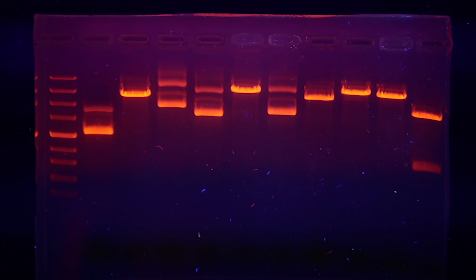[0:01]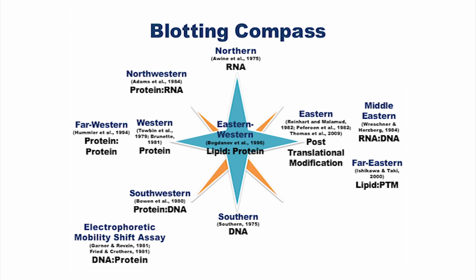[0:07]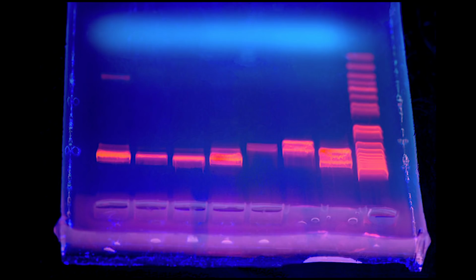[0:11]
A few weeks ago, we looked at gel electrophoresis, an incredibly versatile technique used for at least a dozen different types of analysis of different biological molecules and their interactions. As a quick reminder, the technique works using a special block of gel and electricity to pull molecules through it. You put your sample in pre-made holes in the top of the gel, and a special mixture of control molecules in a hole next to it, then turn on the power and let them run.
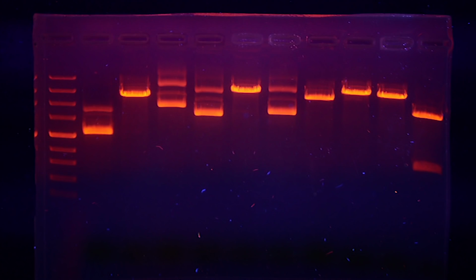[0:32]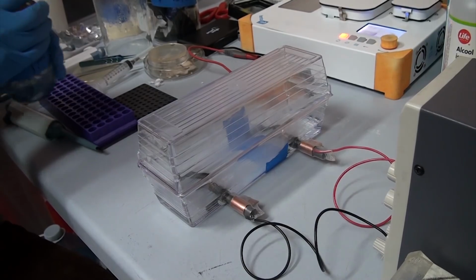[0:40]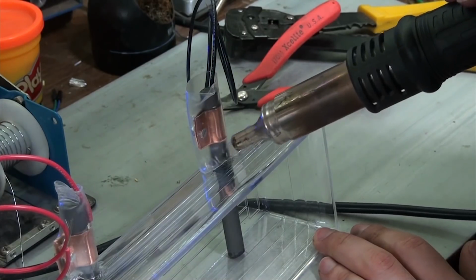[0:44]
The control mixture will spread out as lighter molecules in the mix move faster through the gel and form a series of bands made of molecules of known size. You can compare any bands that your sample produces with these control bands to gauge the size of your sample molecule. Of course, this is a simplification, and you can do a lot more with gels. As part of that video, we looked at how you can make the special tank you run gels in for only a few dollars worth of parts.
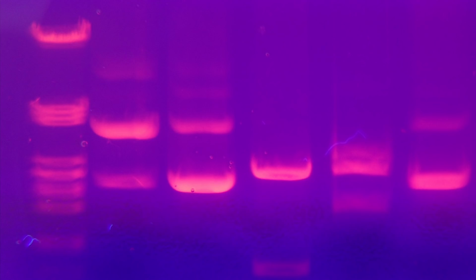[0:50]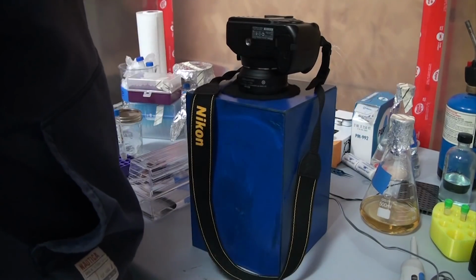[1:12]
The tank works well, but there was an issue I noted, which is actually seeing the bands once you've run a gel. In theory, you can just kill the lights in the room, throw on some UV-blocking glasses, and shine a blue or UV light on the gel and see the bands. But in the case of DNA electrophoresis, the amount of DNA in each band is minuscule, and even though the DNA is stained with a dye that glows under UV light, the amount of fluorescence can often be below what humans can easily see. Luckily, there's a device that solves these problems called a gel doc.
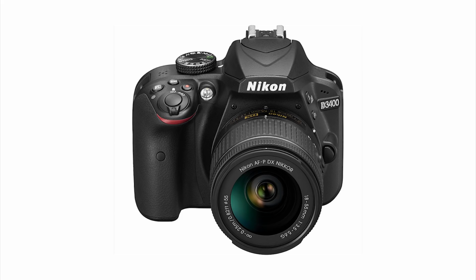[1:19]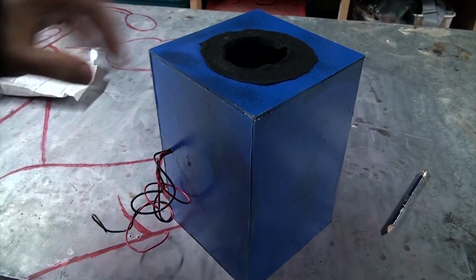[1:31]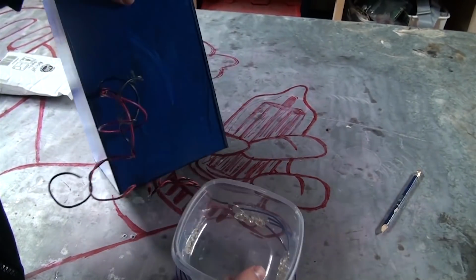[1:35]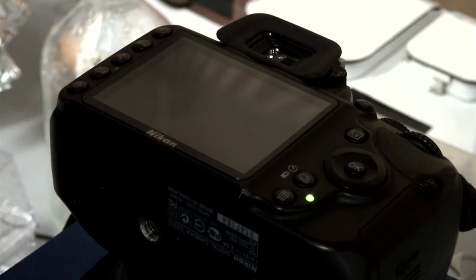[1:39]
Basically, it's a special box that replaces our shoddy vision with some nice, calibrated silicon, i.e. a camera. Normally, gel docs are crazy expensive, easily $8,000 to $12,000, if not more. And yes, it'll come with a lot of bells and whistles like a screen and automatic controls, but in essence, all it is a box with a hole in the top for a camera, a transilluminator, which is just a bunch of blue or UV lights, and a filter on the camera to block that blue or UV light out. So of course I built one, and I'm honestly really impressed with the results.
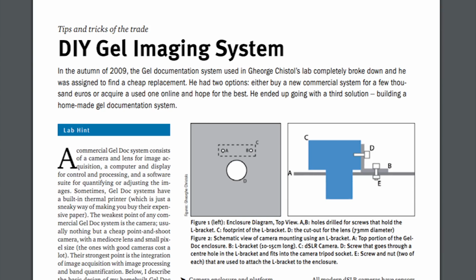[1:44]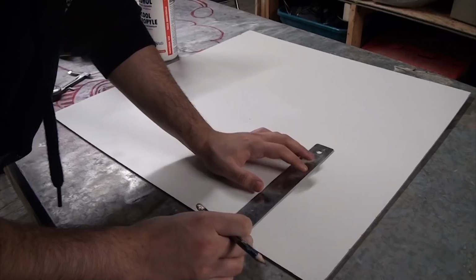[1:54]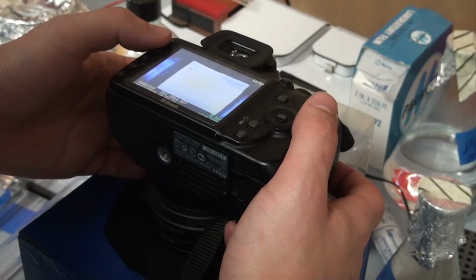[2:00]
I got the basic blueprint from an article in the Lab Times about building a DIY gel doc, and I've linked that in the description. In the paper, they're pretty clear that you don't need to stick to their exact design and lots of variations will work, so in this video I want to go over what I ended up making and the parts I used. Then we'll look at some tests and other fun things that this device can do. Let's start with the camera.
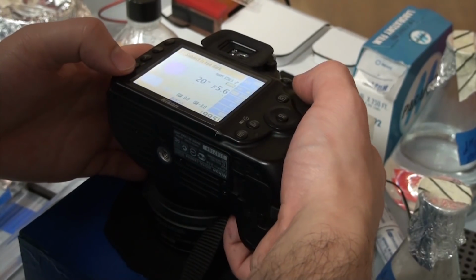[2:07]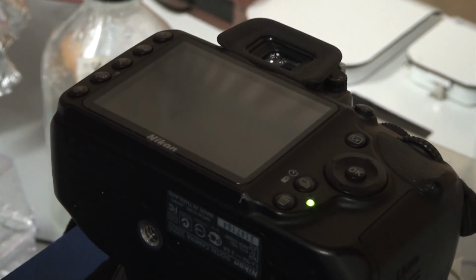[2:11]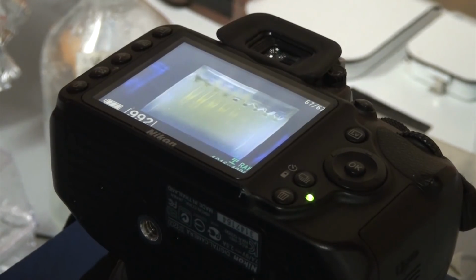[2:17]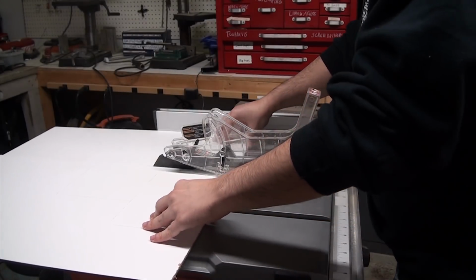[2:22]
I'll be using my Nikon D3200 as the camera because it can take long exposures, and gives me lots of control over the settings so I can take the best picture possible. You can probably get away with a cheaper camera, but your results may vary. Personally, I really would recommend a DSLR for this, as my best results came from a 20-second exposure, which simple point-and-shoot cameras can't usually do. I figured out the minimum focal distance of my lens, and then designed the box around that.
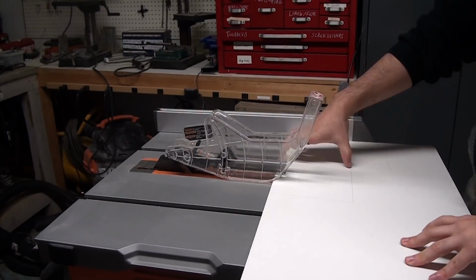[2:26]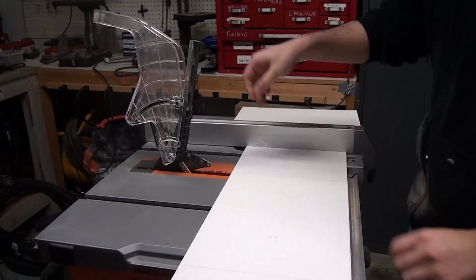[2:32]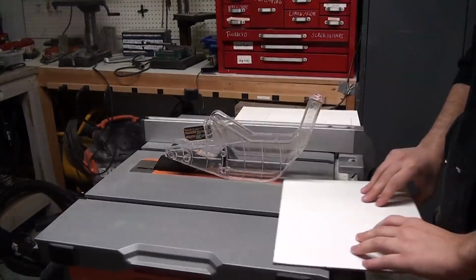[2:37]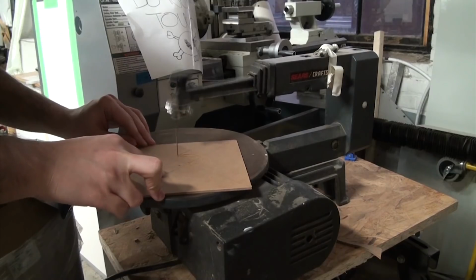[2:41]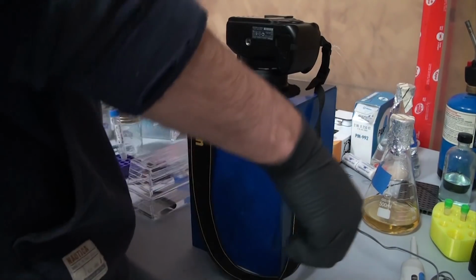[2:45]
I made all the pieces out of some thin MDF, as I wanted all the walls to be opaque but still lightweight. You can use other materials, this is just what I had around. I cut everything on a table saw to make sure all my edges were nice, as the goal is to make this light-proof, so we want to avoid any gaps. For the hole in the top, I just drilled a small pilot hole and used a scroll saw to cut out the rest. I've designed this to fit so that the lens fits most of the way into the box, but will rest on the edge of this hole.
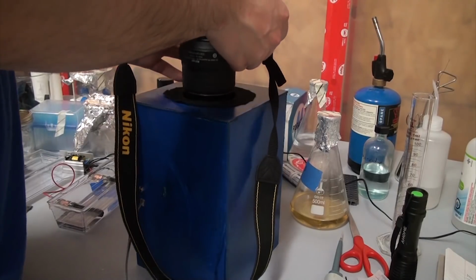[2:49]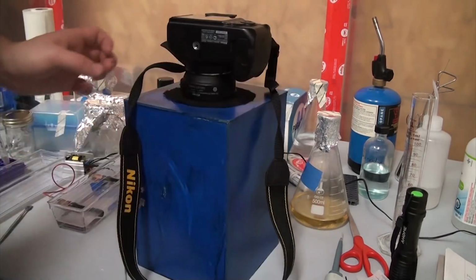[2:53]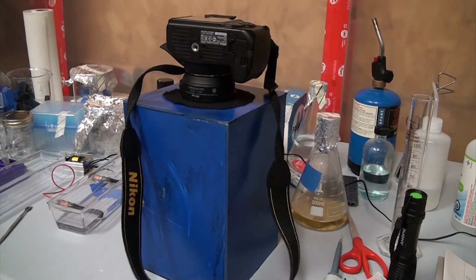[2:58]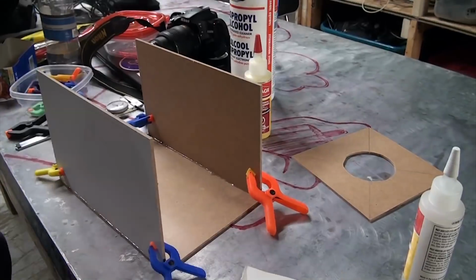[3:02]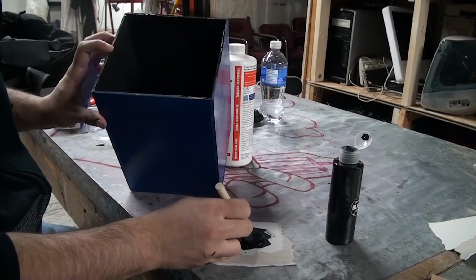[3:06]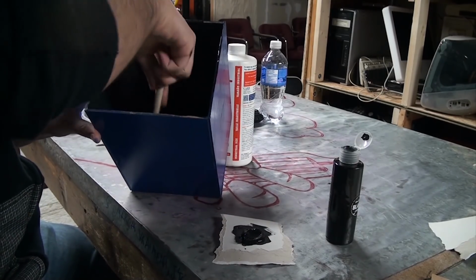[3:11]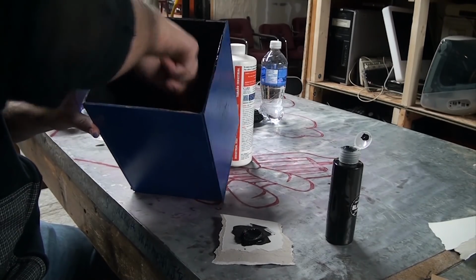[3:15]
I chose a spot on the lens where it flares out that's well past the focus and zoom control, so they won't get bumped if the camera gets moved. My box is 15 cm wide and 25 cm tall, but design yours around your camera and lens. I used some epoxy to glue the box together, and once it was cured, it was time for a paint job. The outside just got some blue spray paint, but the inside got a coat of black 2.0, the darkest paint currently available to consumers. In theory, any matte black paint should work, but I had this stuff so I figured I might as well use it.
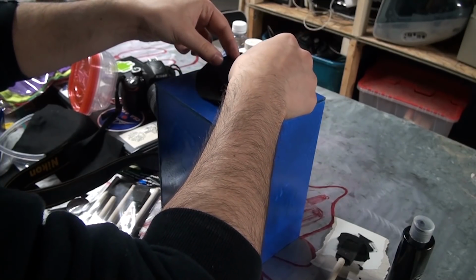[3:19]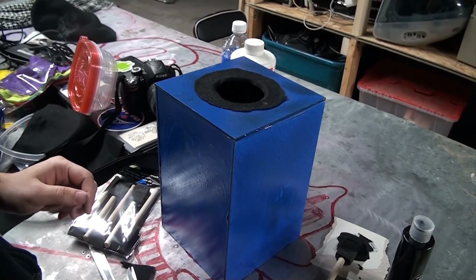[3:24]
With everything painted, I added a small ring of felt to the top hole so that I don't scratch up my camera, and so the lens has a nice soft place to rest on, while also filling any gaps so the light doesn't get in. With that done, it's onto the transilluminator.
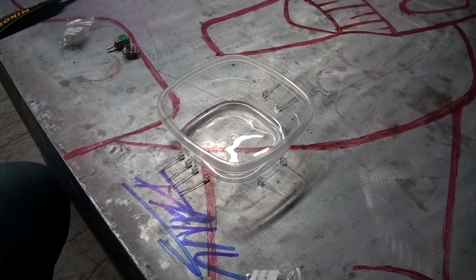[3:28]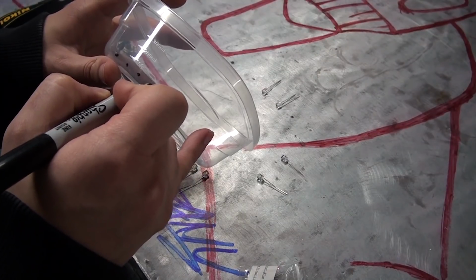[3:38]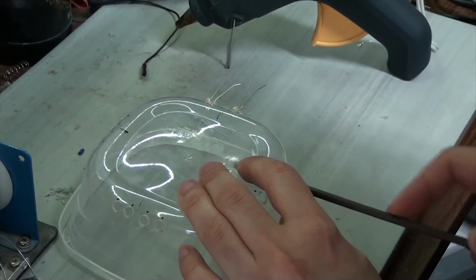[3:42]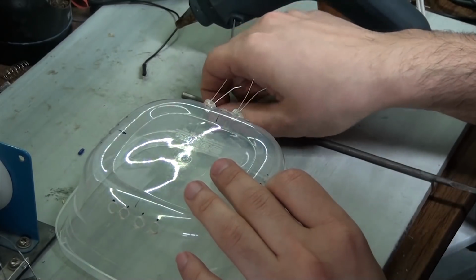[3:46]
For mine, I picked up some cheap blue and UV LEDs. Mine are flathead because I'm using these in another project you'll see soon, but I don't think it really matters. I also picked up a $1 Tupperware container. I marked out 16 holes for the LEDs on the Tupperware and then carefully drilled them out. I also used a file to make sure that the holes were trimmed so the LEDs could sit flat and shoot directly towards the center without tipping upwards.
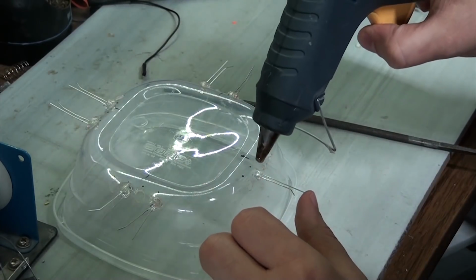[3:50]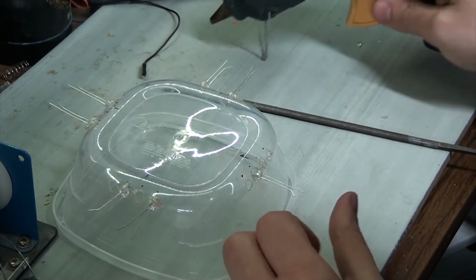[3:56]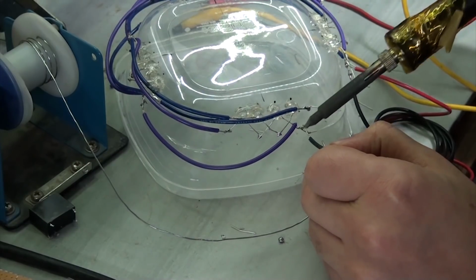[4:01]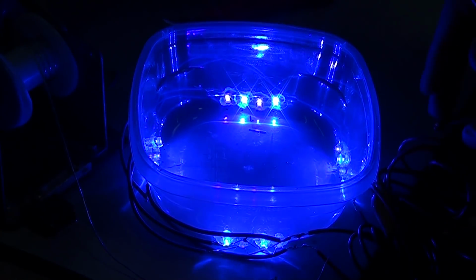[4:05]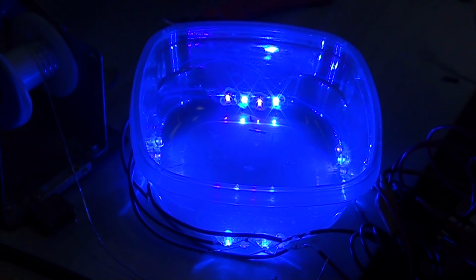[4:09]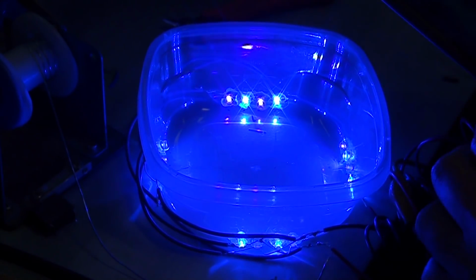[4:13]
I decided to pattern the LEDs while making sure to have two of each kind on each of the four sides to give good light coverage. All the LEDs were glued into place and then it was time to wire them up. I wired all the blue together in parallel, and separately, all the UV together in parallel. I forgot to film it, but I also added a 200 ohm resistor to each set so they don't get fried. Once everything was wired up, I could add some power to check and see if everything is working right. The nearly blinding light shows that it is.
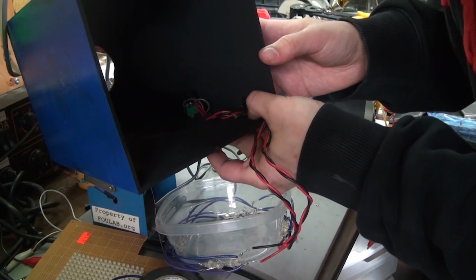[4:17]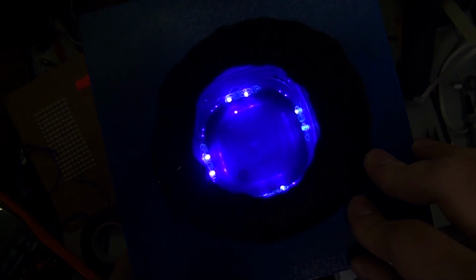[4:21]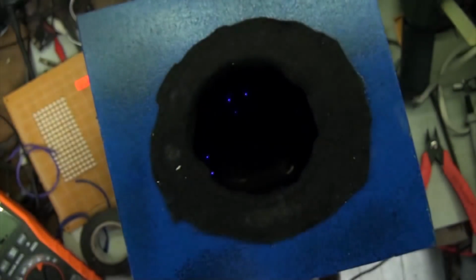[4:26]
I added a switch and wall power supply, and then after tidying up the wires, everything was mounted in the box. I got it wired up so that the three positions on the switch are all UV, UV and blue, and all blue. To turn it off, I just unplug it.
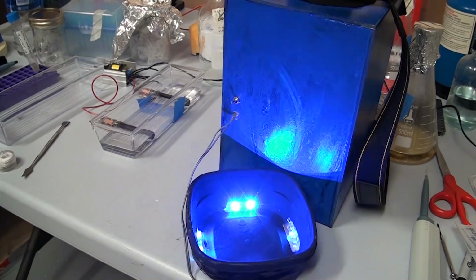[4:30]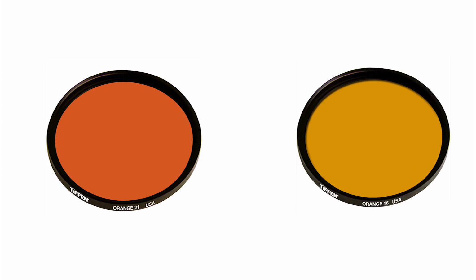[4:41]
With the box built, let's finish this up by talking about filters. As you can see, the blue light is blinding, so we need a filter to remove it so we can see any fluorescence on the gel. The filter I went with is a Tiffen 21 Orange 52 mm filter. The source paper says that the Tiffen 16 also works. I went with the Tiffen 21 because it had one-day shipping on Amazon at the time.
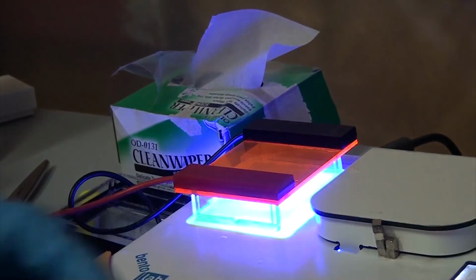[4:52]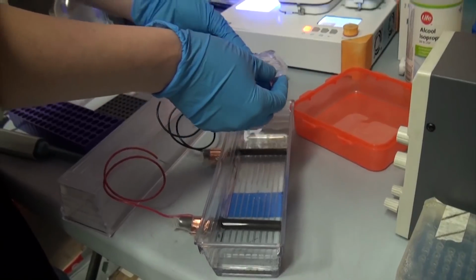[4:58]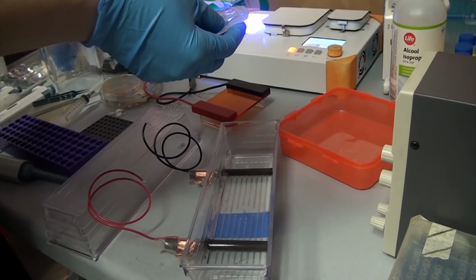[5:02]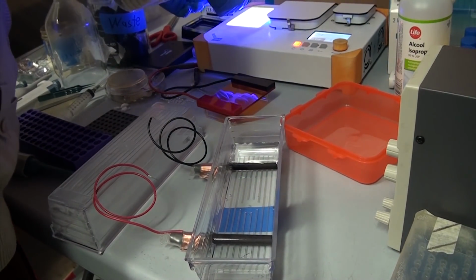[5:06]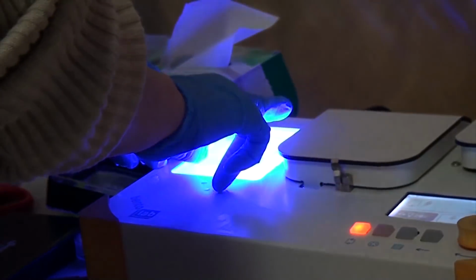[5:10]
Now, it can be tempting to avoid going for these, as they're a bit pricey at 50 bucks each. You're probably thinking, well, why can't I use some orange plastic or stage lighting gels? The answer is because they probably won't work. I tried a bunch of different lighting gels and several different pieces of orange plastic to no avail. I wasn't really expecting them to work, but I figured for the few dollars worth of materials, I could test it out and tell you that they don't work. So don't try and buy them as a cheap hack. Stick to the Tiffen filters. I'm sure there are other good quality filters that will work, but these ones are known to work.
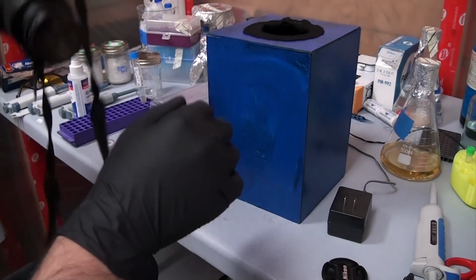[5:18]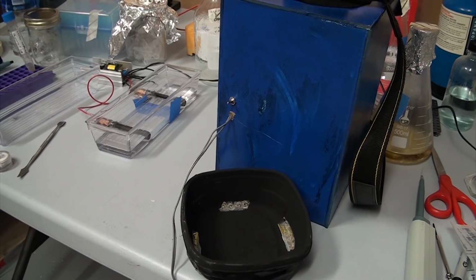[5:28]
In either case, attach the filter to the front of your camera and you're ready to take some images of gels. In the first test, I hadn't painted the transilluminator yet, so there was a lot of glowing contamination from the table we set up on. I've since changed that and it isn't an issue anymore. The gel we're looking at was testing some DNA extractions I did recently to see if they'd worked. This is how the gel looked when I first took the picture.
I then took the image and played with the settings in Photoshop, cropped it, and adjusted things until it was able to mimic the look of a professional gel doc. I made sure not to edit any details, just adjust the settings like curves and exposure and hue. I found the most useful setting to be the black and white control. By the time I was done, the bands were super visible. So much better than trying to eyeball this. Unfortunately, you can see all the contamination really clearly, and one of the bands that's easier to see on a professional gel doc is obscured here. A quick coat of paint solved this completely.
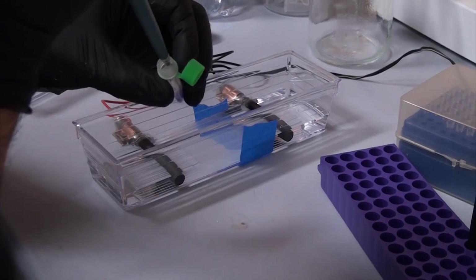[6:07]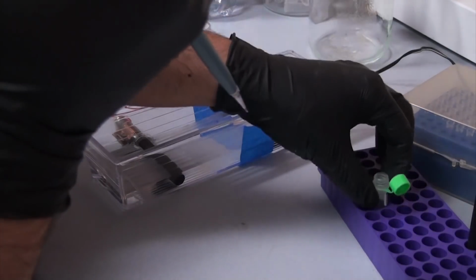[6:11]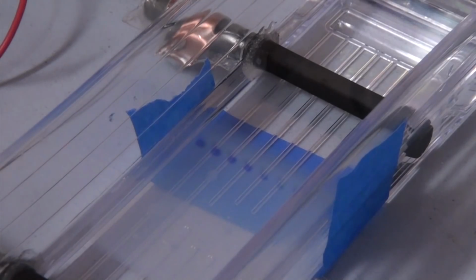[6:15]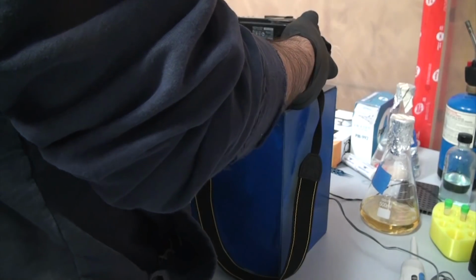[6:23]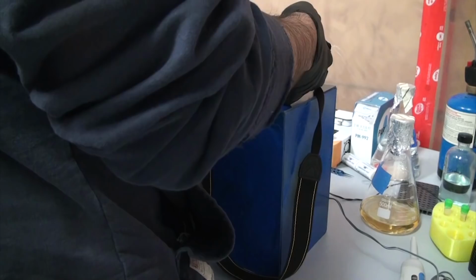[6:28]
With the newly painted transilluminator, I wanted to really dial in the settings, so I ran a new gel with decreasing concentrations of ladder, that control mixture I mentioned earlier. From left to right, I started with 5 microliters of ladder, and decreased 1 microliter in each successive well, and did 0.5 microliter in the 6th well. I didn't show it, but after I ran the gel, I sat for almost an hour playing with my camera settings to get the best shot of the bands.
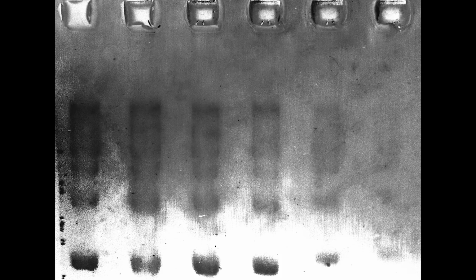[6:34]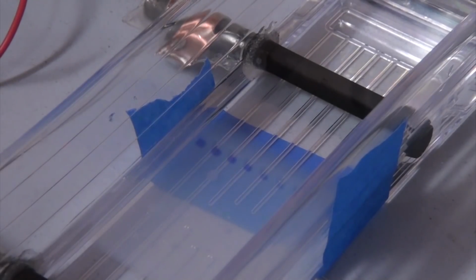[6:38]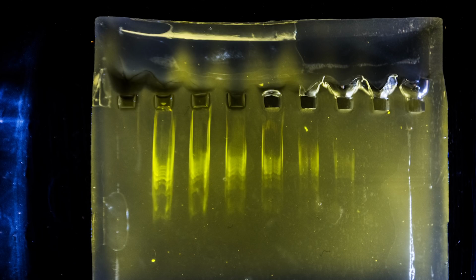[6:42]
For this first control gel, you can see all the way down to the 1 microliter lane, and if you're generous, can slightly see the 0.5 microliter lane. So I ran another control gel, but this time with a different gel stain and more of it. I think the results speak for themselves.
While this is a really ugly gel because I'm still working on adjusting the voltage and gel concentration for this gel box, you can see everything super clearly. Even the 0.5 microliter lane is bright enough to see easily. I bet I could have halved the amount of ladder again and it would still show up.
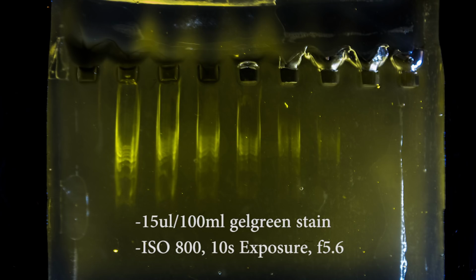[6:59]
So far, the best settings for all of this I've found are 15 microliters worth of Gel Green stain per 100 milliliters of gel, an ISO of 800, an exposure of 10 seconds at f5.6. I think I'd decrease the gel stain by a microliter and this would be perfect.
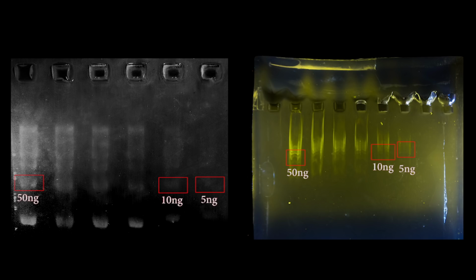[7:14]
Now a bit of math. On the far left, there's about 50 nanograms of DNA in each of those individual bands. So in the 1 microliter lane, which is the 5th lane, there should only be 10 nanograms of DNA per band. And in the faint 0.5 microliter lane, there should only be 5 nanograms of DNA per band.
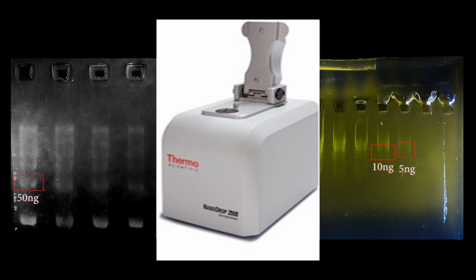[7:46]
That means that so long as I use this gel as my control, keep all my camera settings and Lightroom and Photoshop settings the same, I can roughly quantify DNA based on how bright a band appears. All the way down to 5 nanograms, which is a tiny amount of DNA and actually within the noise figure of a NanoDrop spectrophotometer. I even think it could go down to 2 nanograms with that extra gel stain.
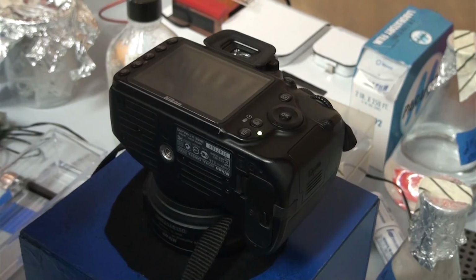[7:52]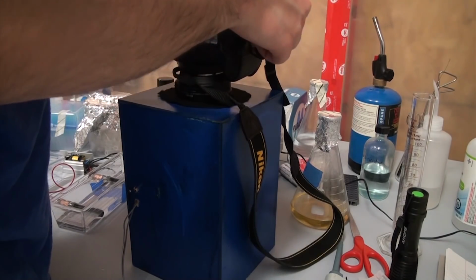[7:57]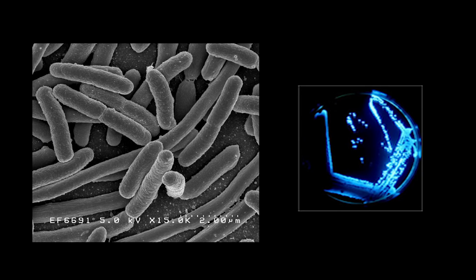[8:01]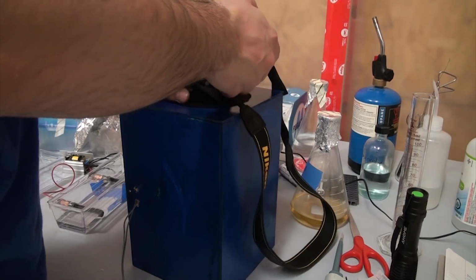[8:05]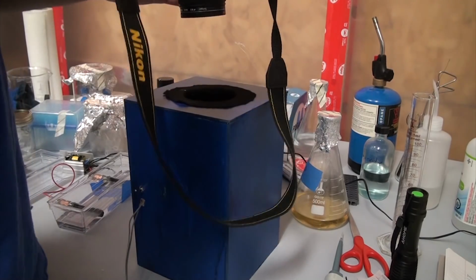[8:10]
One final fun test is to look at something other than gels. Since we've made a perfect light-proof box, this setup is ideal for looking at things like bioluminescence. I happen to have some bioluminescent E. coli, so I thought I'd give it a shot. I removed the filter from the camera since the bacteria glow blue and we wouldn't want to block that out. I set the ISO to about 3200 and took a 1-minute exposure.
Sure enough, you can clearly see the blue glow of the bacteria. Their brightness changes over time though, so a fresh plate will glow brighter than an old plate, and this particular plate was a week or two old. Honestly, I'm surprised it was still glowing. In a couple of weeks, we'll come back to this bacteria and talk about how their bioluminescence works, and look at some cool things that can be done with them.
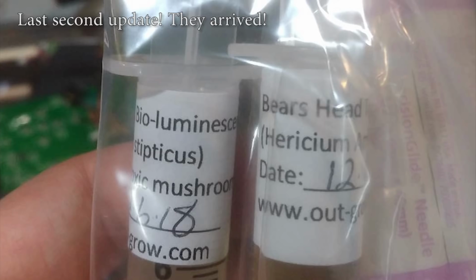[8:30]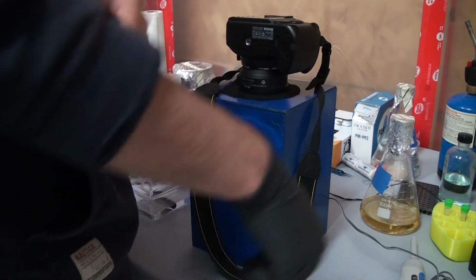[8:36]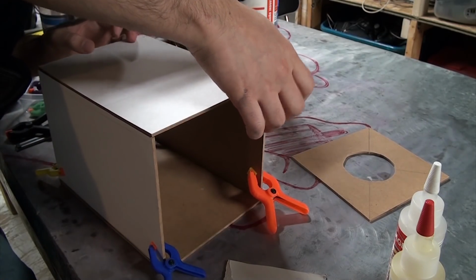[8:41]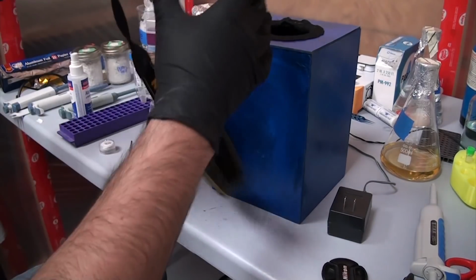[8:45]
And I'm waiting on some bioluminescent fungus to arrive, and when it does, I'm going to take a really fun time lapse of it growing in this setup. But other than that, there's not much more to gel docs. They're a simple piece of kit that if you've got a lot of the parts already, like a decent camera, they are absolutely worth building. For me, this was a fun little one-day build, and I think it will get a lot of love in the near future.
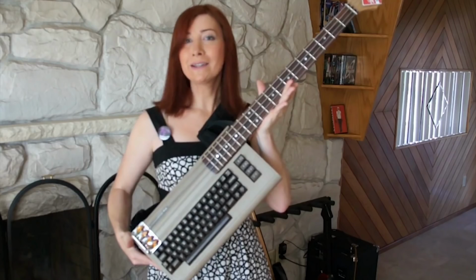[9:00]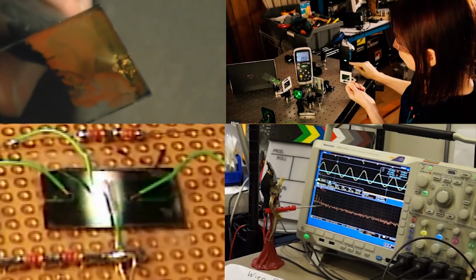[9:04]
Before I wrap up, I just want to talk about something people are calling Nerd Thunder. It was an initiative for some cross-promotion that Jerry Ellsworth started, and I thought it would be a great chance to give a shout-out to some other great science and engineering channels. First off, Jerry herself. Her channel is amazing, and she's done lots of great projects that I'm excited to try myself someday, like making her own OLEDs, EL wire, transistors, and so much more.
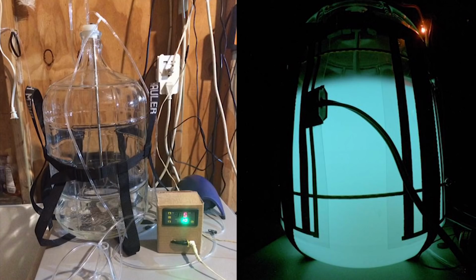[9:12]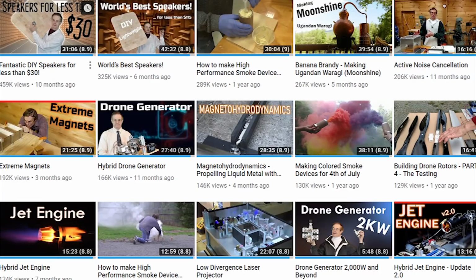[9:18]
On the bio side of things, there's David Ishii. He does some amazing biology work, and we'll be talking about his bioreactor when we get to the bioluminescence video. And finally, a channel that's really been growing a lot lately and that has some amazing content, Tech Ingredients. They've got a similar style to mine insofar as they cover a really interesting and broad assortment of topics, including lasers, jet engines, and making moonshine.